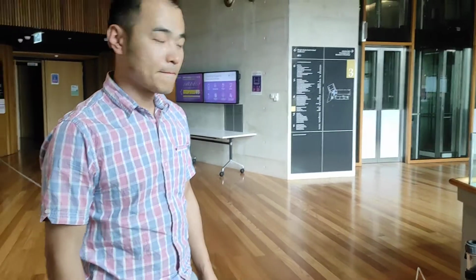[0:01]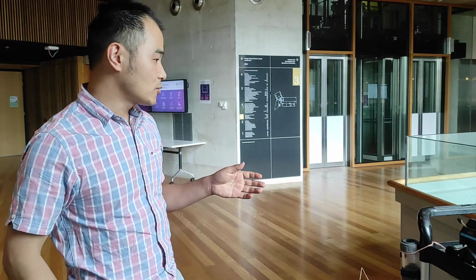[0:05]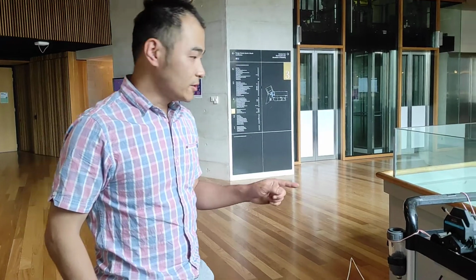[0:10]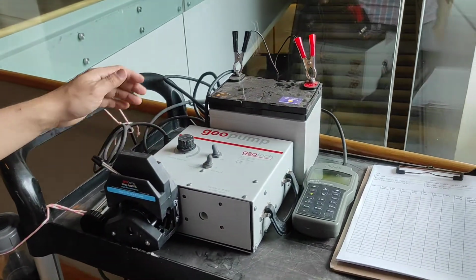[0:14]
Oh, hello. I'm here to show how to test a Peri pump before we go to the field site. So in this setup here, we've got a Peri pump, and we've got a battery that supplies 12 volt DC
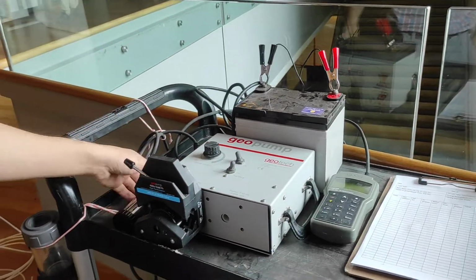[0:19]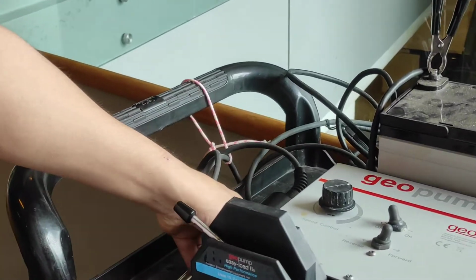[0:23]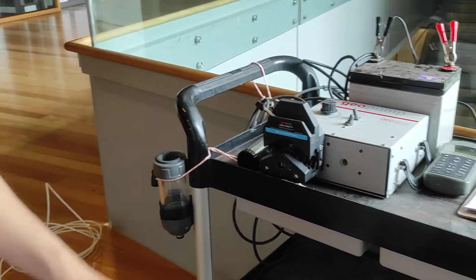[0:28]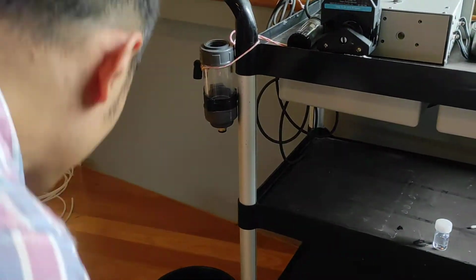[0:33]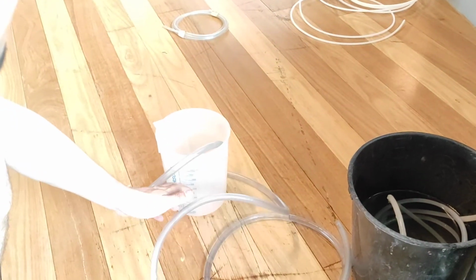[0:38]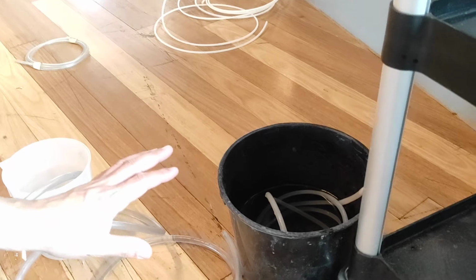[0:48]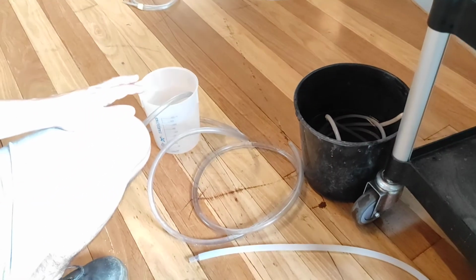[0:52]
to the pump. We've got a flow. This is the water quality meter to measure continuously the water coming out from the borehole. Here is the measurement chamber, and here is the water outlet. So we've got a water level here to measure how much water has been pumped. So once the water is full here, we put it to another separate bucket. So basically the bucket saves all the water coming out from the borehole.
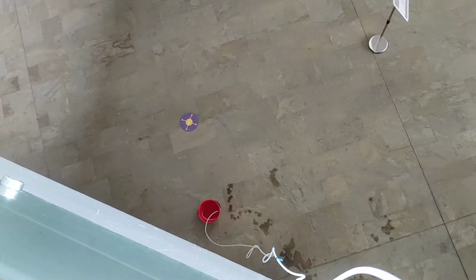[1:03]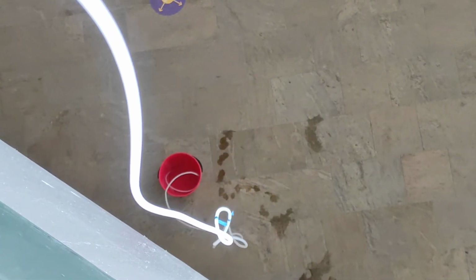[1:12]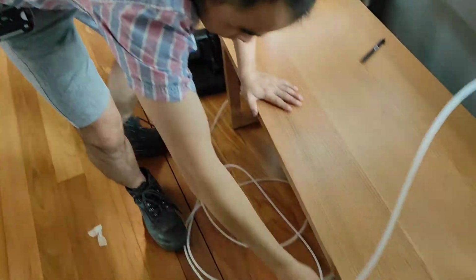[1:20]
So now let's connect it. So here you can see we've got a rigid pipe that goes to the lower level, and the lower level has got a bucket with some water. So you can still see that there are some marks there. That is the indication of how deep the pipe has already been inserted to the borehole. So it goes all the way to the upper section, which looks like this.
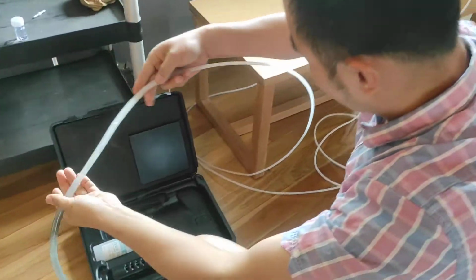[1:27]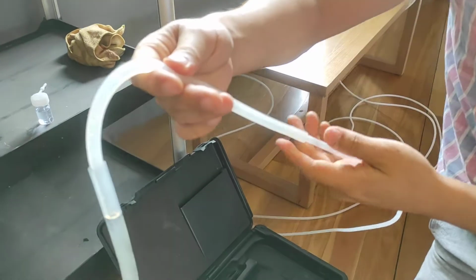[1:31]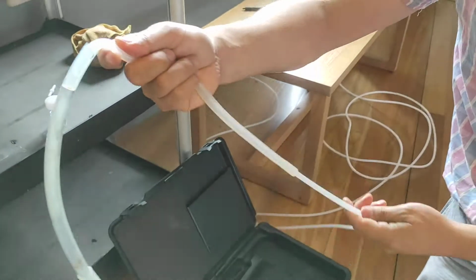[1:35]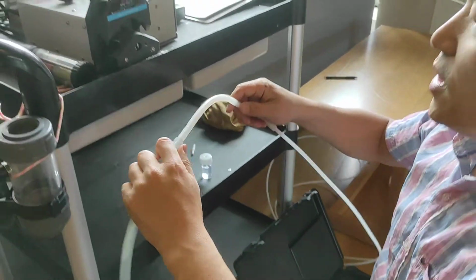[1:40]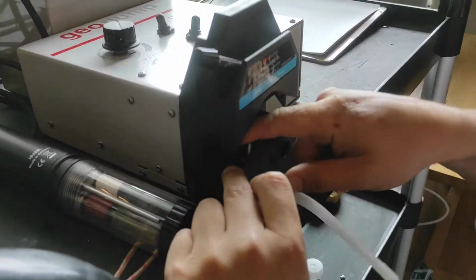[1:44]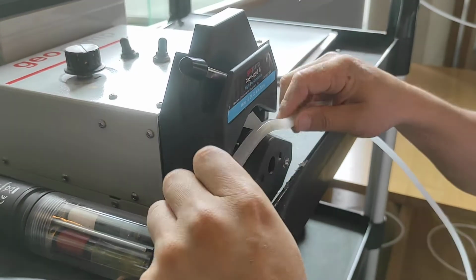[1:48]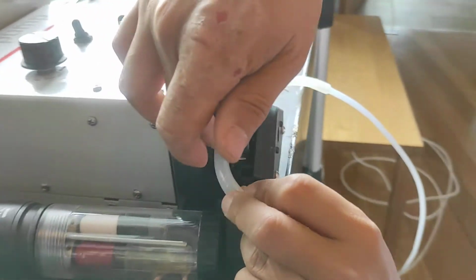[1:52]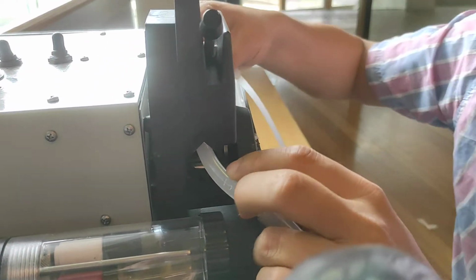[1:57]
And here you've got a few transitions. So here is the rigid pipe, and it's connected to a flex pipe, so it's relatively soft. This one is relatively rigid. So the Peri pump will be squeezing this soft pipe continuously. So you can see this one tends to spin all the time. And the way we insert it is to put it right in the middle and ensure that the pipe is in between the teeth on both sides.
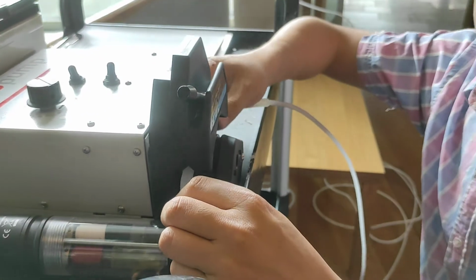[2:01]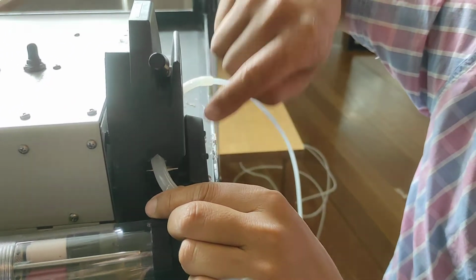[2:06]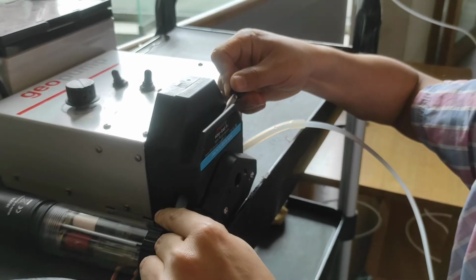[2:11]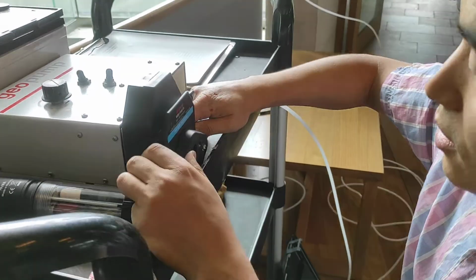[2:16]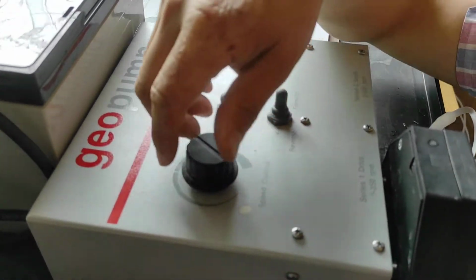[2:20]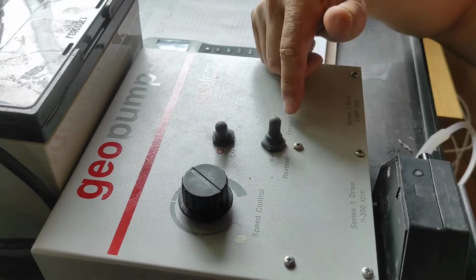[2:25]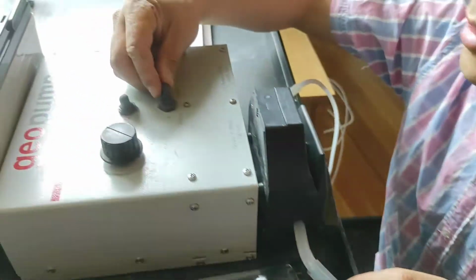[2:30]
So on the other side, you also have the same teeth. So ensure that it sits right in the middle, and then you just press it all the way down to ensure that it's inserted in the right location. Now, in terms of the configuration, here we've got the speed control, the dial for speed control. So this is the flow direction. Currently we are moving from this direction to the other direction. So obviously we need to use reverse.
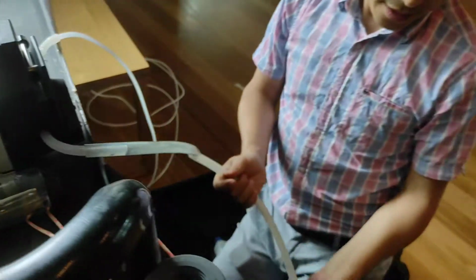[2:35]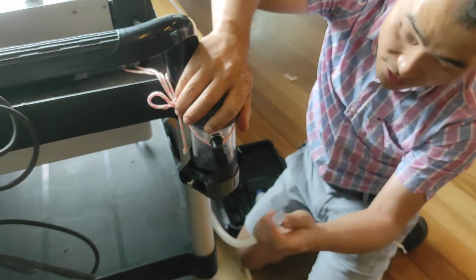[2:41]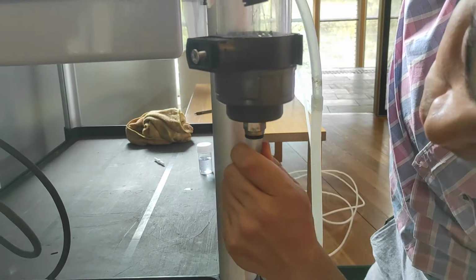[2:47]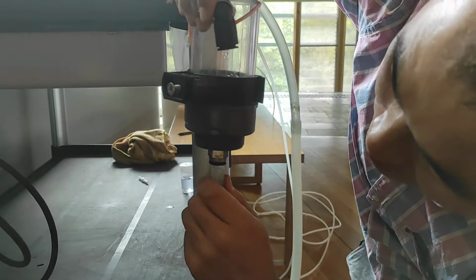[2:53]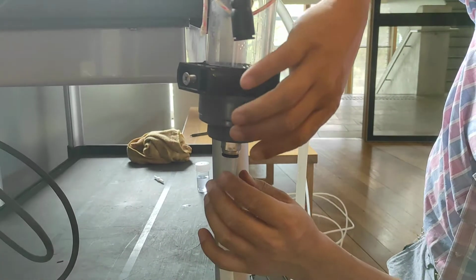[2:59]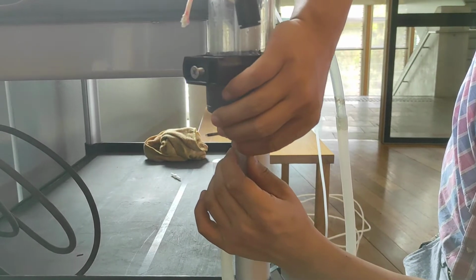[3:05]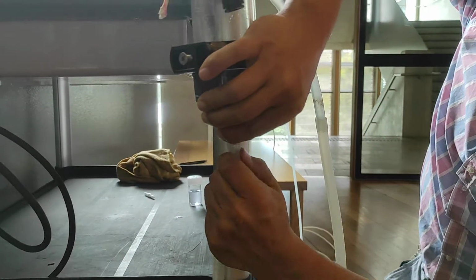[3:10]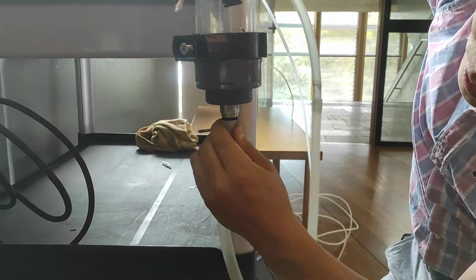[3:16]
And for the outlet, you will need to connect that to the water quality chamber. So it has to be fed in from the very bottom. The way you insert it is that you push it all the way, and then give a pull so that it's sealed properly. When you try to pull, it becomes very difficult. The only way to take this out is to use your hands to fix the top ring, and then try to pull it out. So that's the only way to pull it out. Ensure that it's been pulled out all the way so that it will be sealed properly.
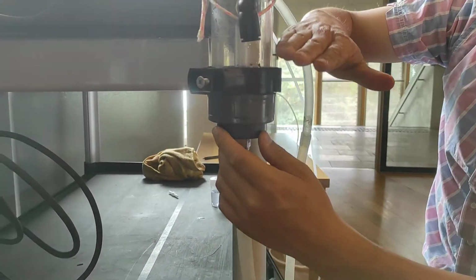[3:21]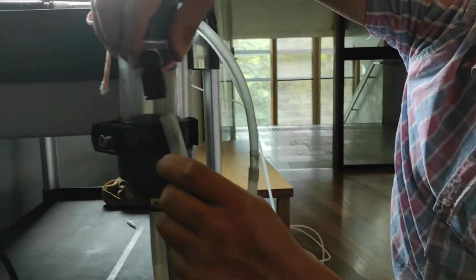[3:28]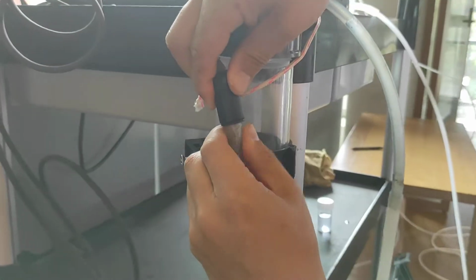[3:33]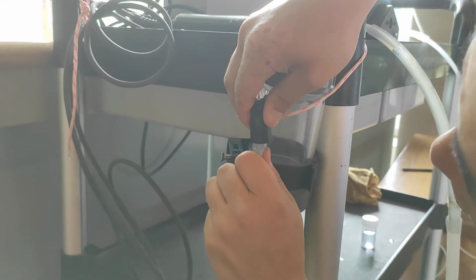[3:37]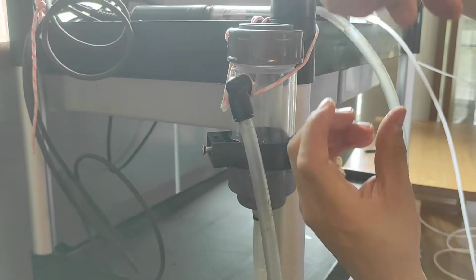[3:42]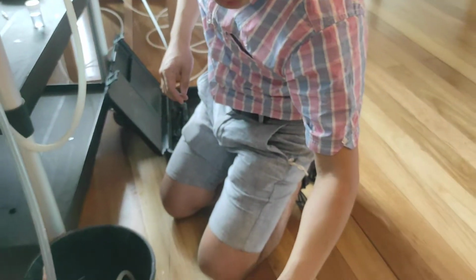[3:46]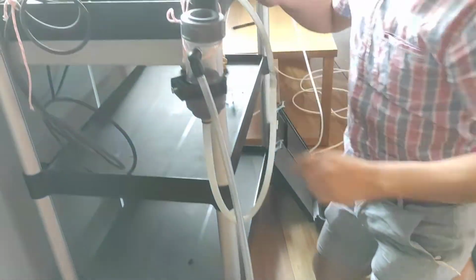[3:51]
And once the water goes from the bottom, it will fill up the chamber and eventually lift from here. So this is the section. Now we connect another pipe in, and again it has to be squeezed all the way. And then pull out a little bit so that the pull will reduce the diameter and make a perfect seal. And it goes all the way to the tubing. Right? Now, we also need to install the sensors.
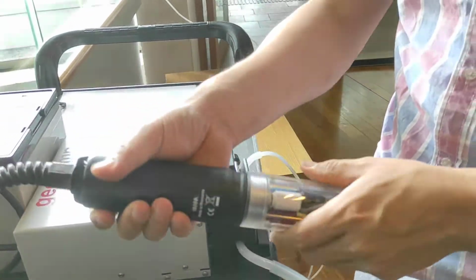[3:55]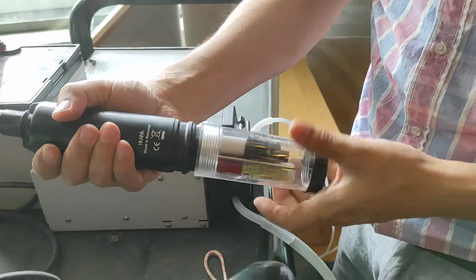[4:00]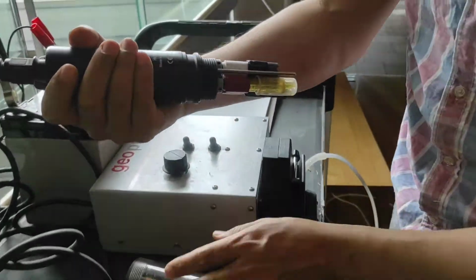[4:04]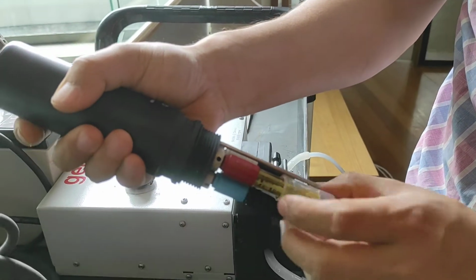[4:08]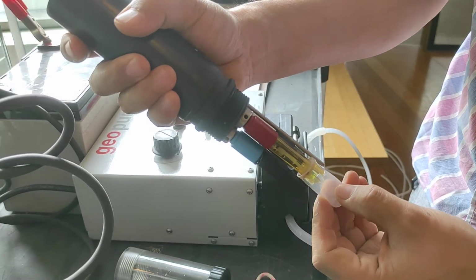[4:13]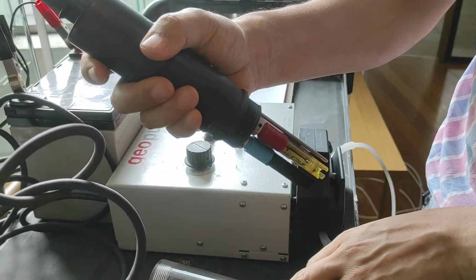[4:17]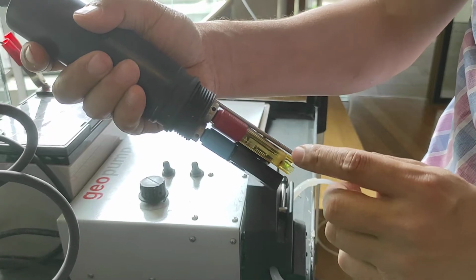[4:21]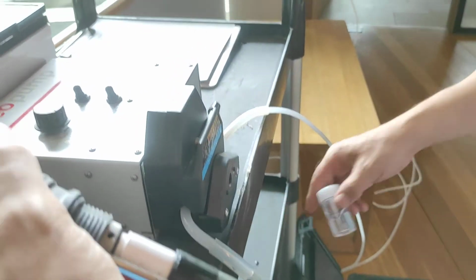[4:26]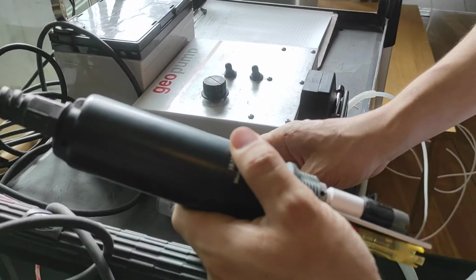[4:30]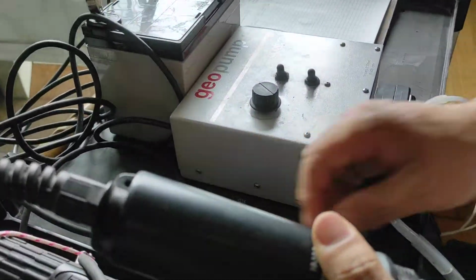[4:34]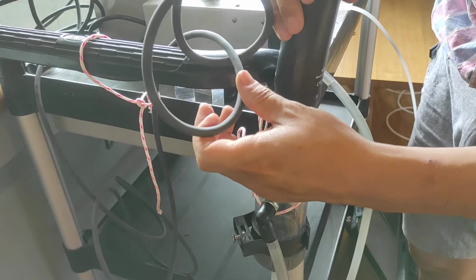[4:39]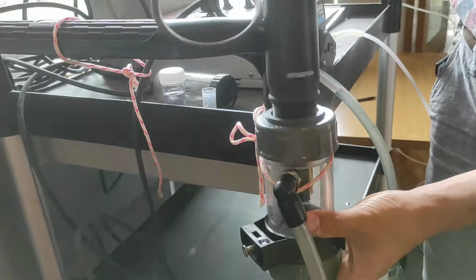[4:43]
So we've got the Hanna water quality measure. So we need to first unscrew the cap. And after it's been unscrewed, we need to ensure that the cap on the pH meter is removed. And remember that the water there is to prevent the pH meter from being damaged. And after the test, we always need to fill that water and ensure that the pH meter is submerged. So we provide a solution here. When the test is finished, add the water into that cap and ensure that the sensor is submerged. And then you insert that into the chamber and twist it
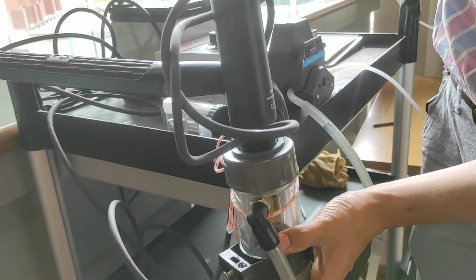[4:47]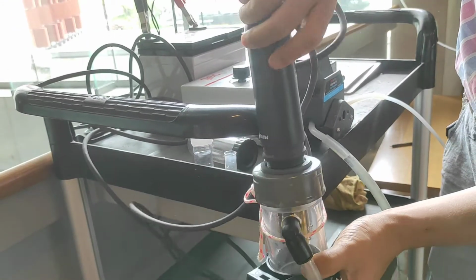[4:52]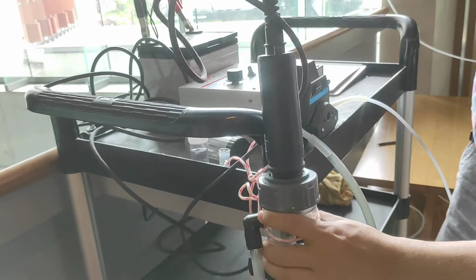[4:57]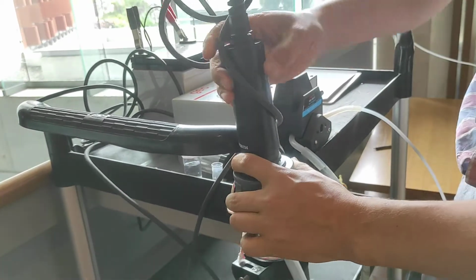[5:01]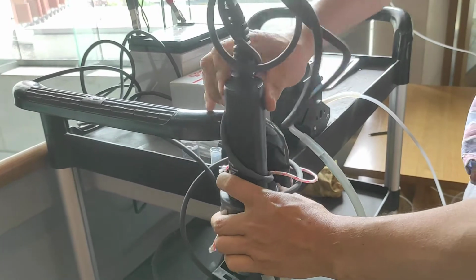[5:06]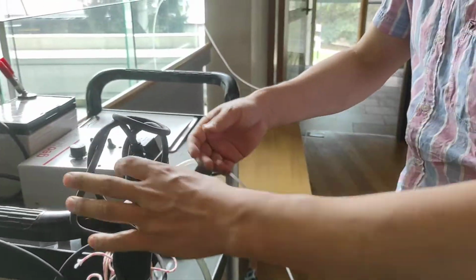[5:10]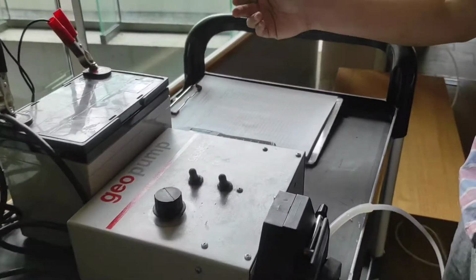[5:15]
to ensure that the flow is able to be measured by the multimeter here. A very important, useful thing is that I would advise bringing a table on the side, so you would have everything laid out in this manner, where you have the record paper ready and also the pH meter ready.
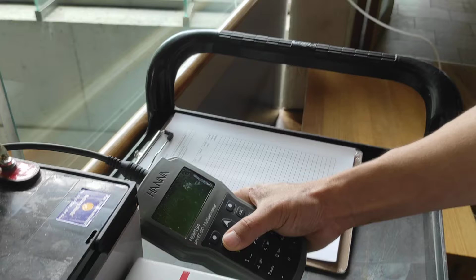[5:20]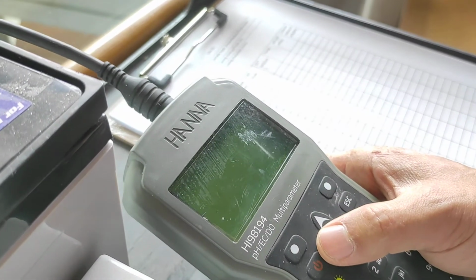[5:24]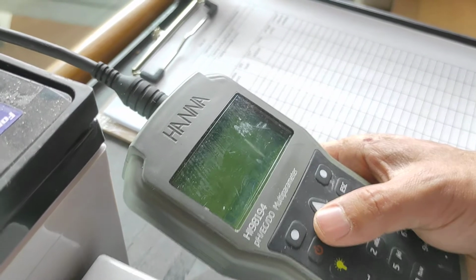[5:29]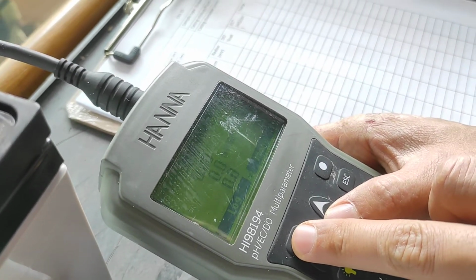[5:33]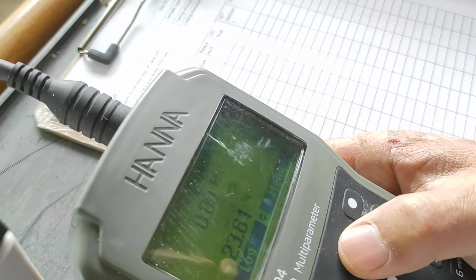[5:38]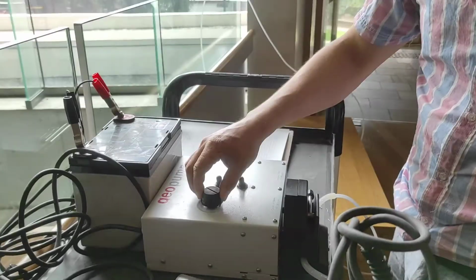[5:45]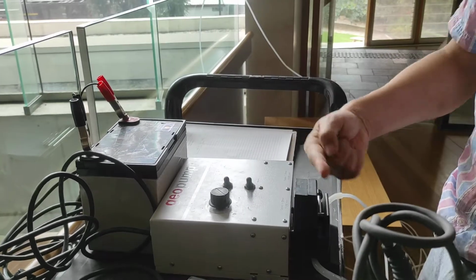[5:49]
So we can switch on the pH meter right now by just pressing the power button, and then you will be able to see the welcome page, and then you just need to connect the measure. So just connect measure, and then you will be able to see some values there. So you can move up and down to change different values. Now let's switch on the pump. So again, before we start, speed control is somewhere right in the middle, and the direction is reversed this way, and then we can switch on.
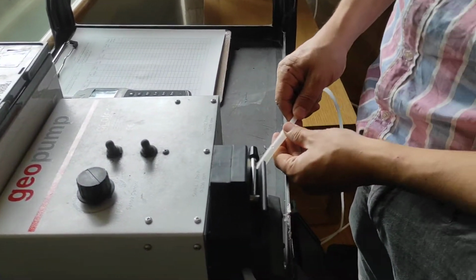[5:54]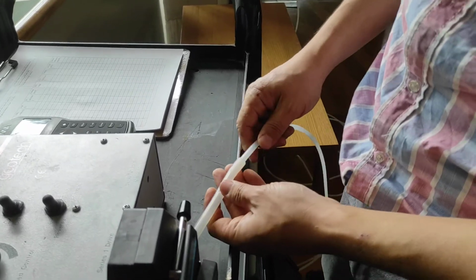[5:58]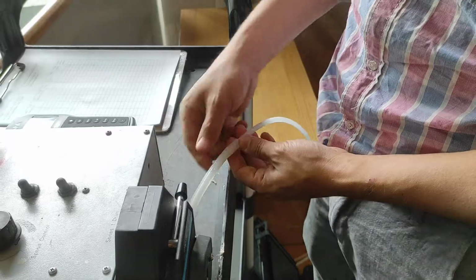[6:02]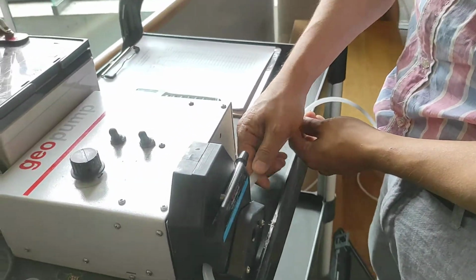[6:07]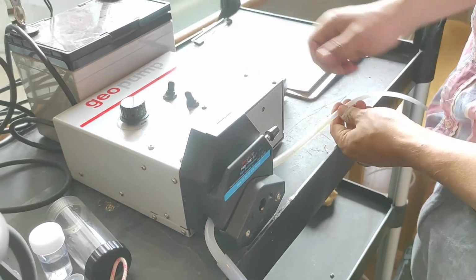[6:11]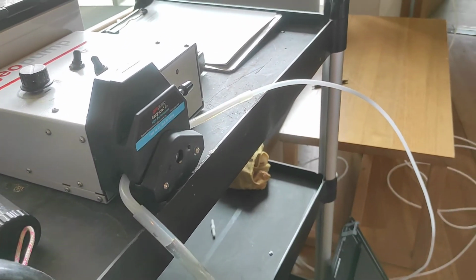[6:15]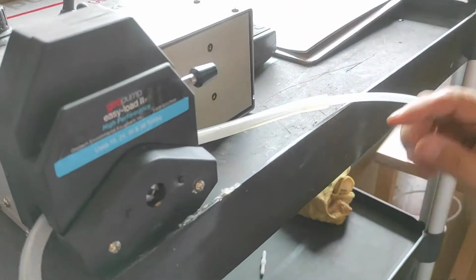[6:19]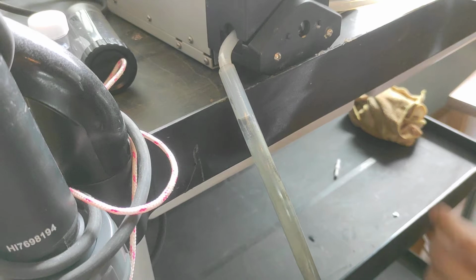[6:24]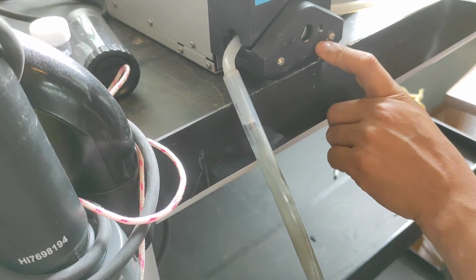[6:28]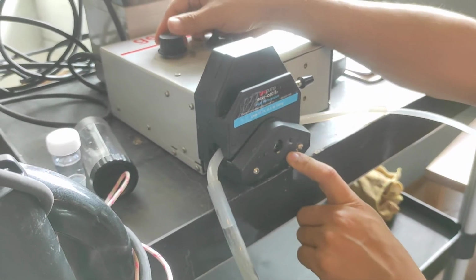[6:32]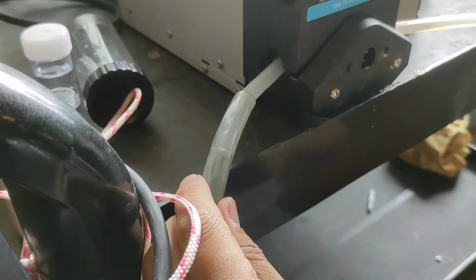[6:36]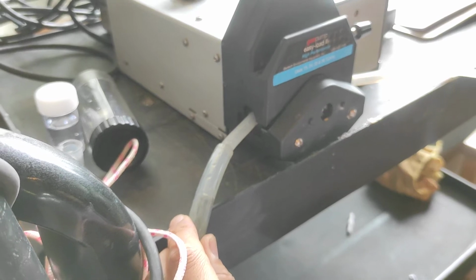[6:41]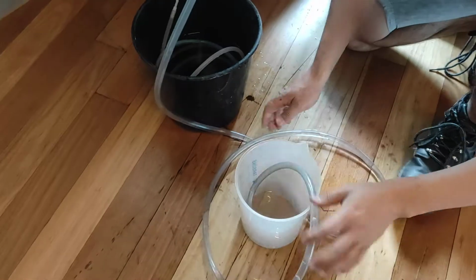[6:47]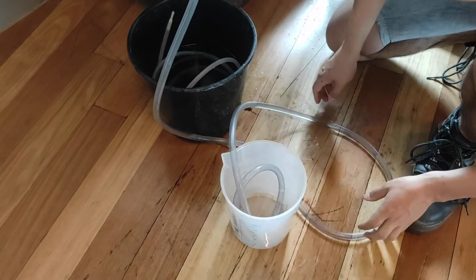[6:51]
So there are cases where the water flows very slowly or probably not moving at all. In that case, we just need to ensure that the section between the rigid pipe and the softer pipe is connected properly, and we just switch it on. And hopefully we are able to identify some bubbles that move along the tube. Currently it's air, so we can't see anything. And at this stage, we probably can speed up the Peri pump. So you will see the speed going up. Now it's maximum. So you can see the water is just moving along this way, and hopefully all the way from the water level in the borehole to the water sampler. So currently we are ready to receive water from the other side.
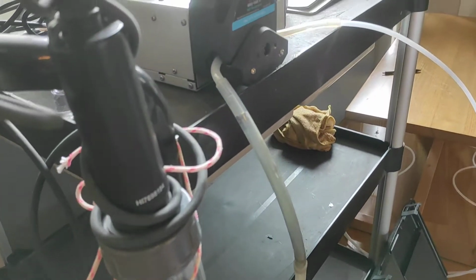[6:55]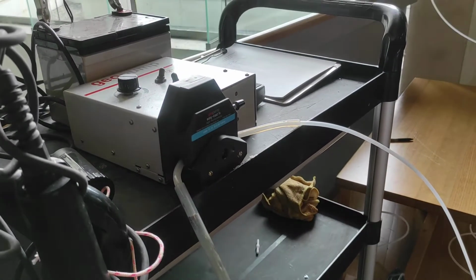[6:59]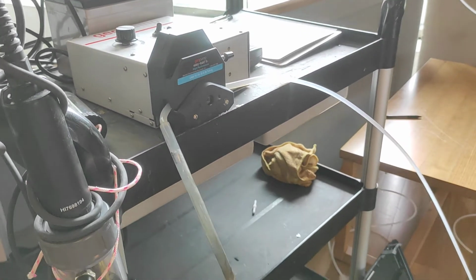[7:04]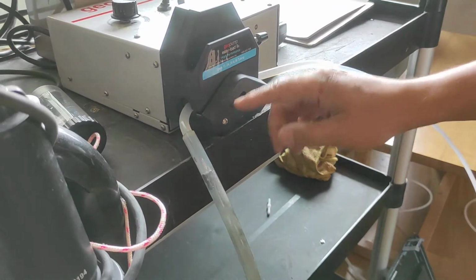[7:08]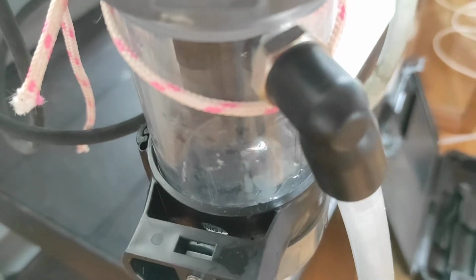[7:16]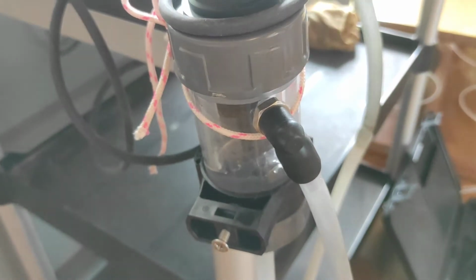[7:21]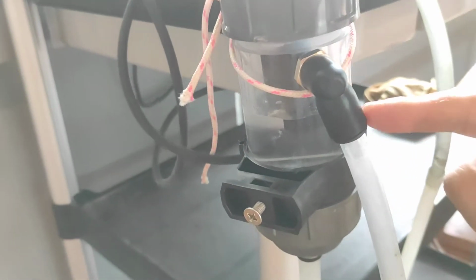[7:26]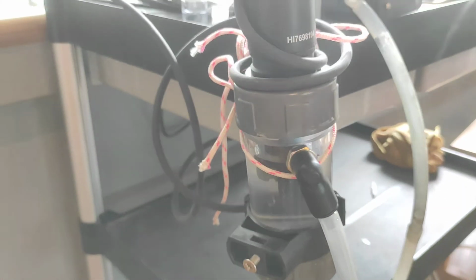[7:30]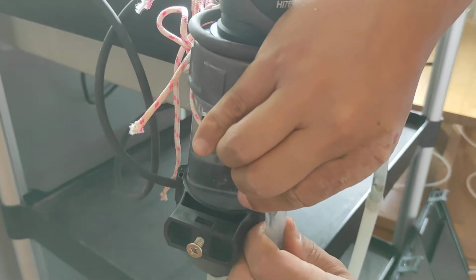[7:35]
Probably we just wait here. So I think the water is already coming to the quantities chamber, so the water level is gradually rising up, and that means the seal in between is done perfectly, and there's no leaking at the very bottom. We haven't tested whether there's any leaking from this outlet, but nevertheless water is moving out. So here this one needs to be further tightened so there is no leaking at all.
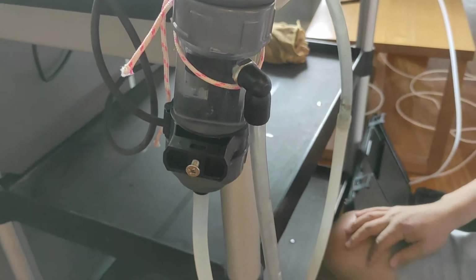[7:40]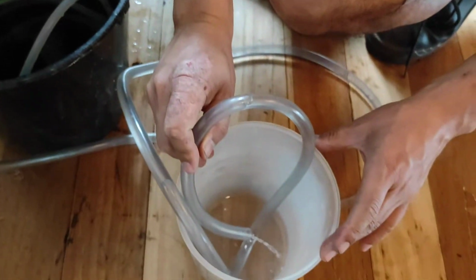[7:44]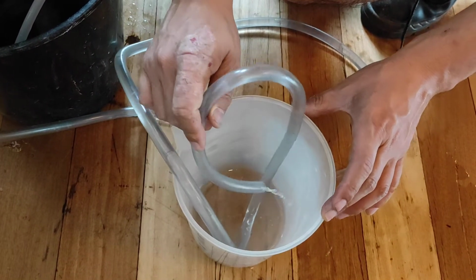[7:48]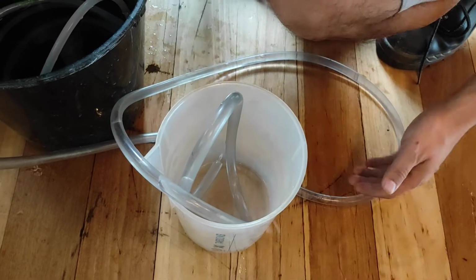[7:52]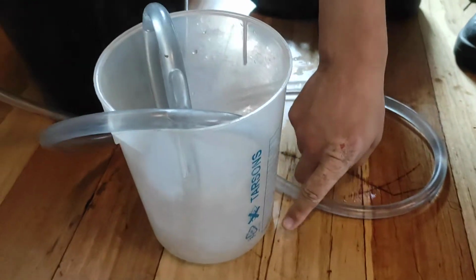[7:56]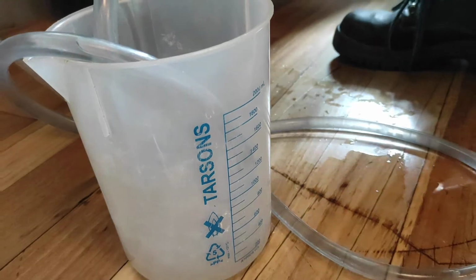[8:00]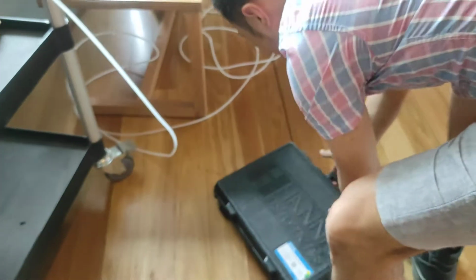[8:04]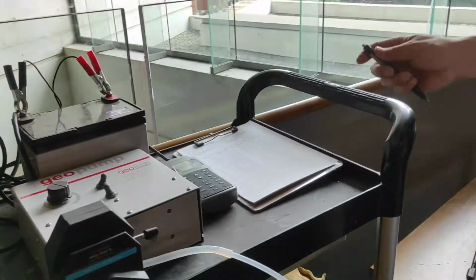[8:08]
So now there's no leaking, and you can see that from the outlet it's coming like a small stream, slowly filling up the container, and then we use this to identify how many liters have been received. Now let's look at how we are going to record the results. So come over here.
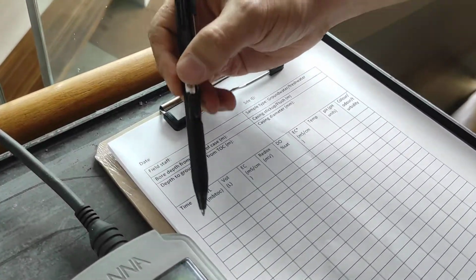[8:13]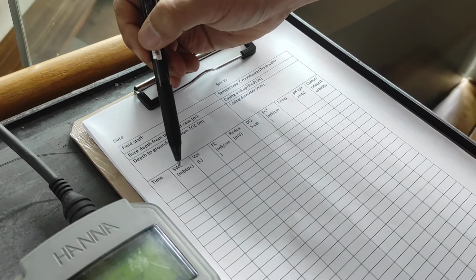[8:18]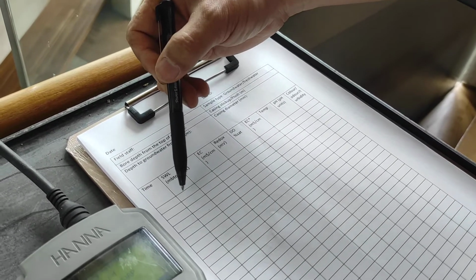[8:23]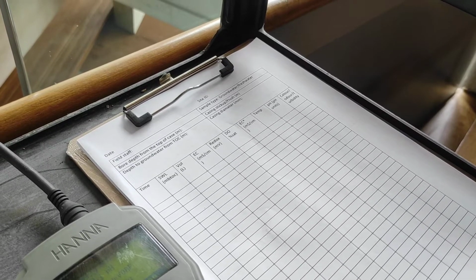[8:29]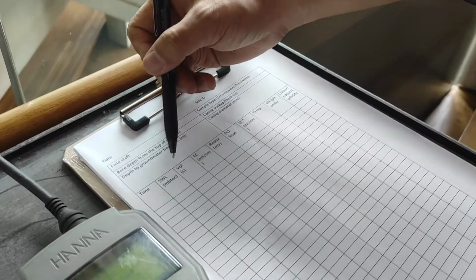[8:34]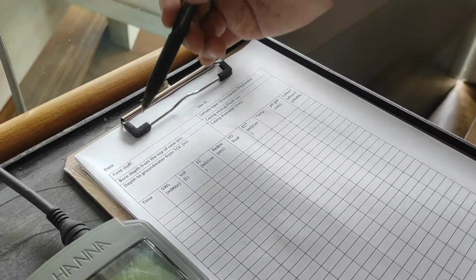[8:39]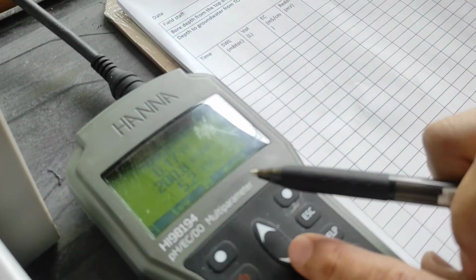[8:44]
In this spreadsheet, we've got time. So when we do the measurements, we write down the time. And the still water level will be measured by a groundwater meter, which will be provided separately. So you just put it in slightly, and once it beeps, that's where the water level is. Record that. And the volume of water is measured by the container on the ground.
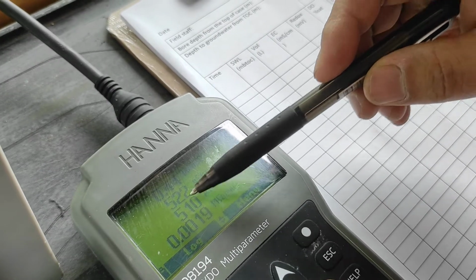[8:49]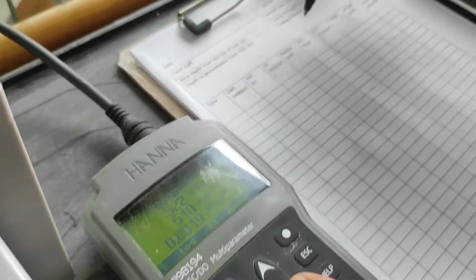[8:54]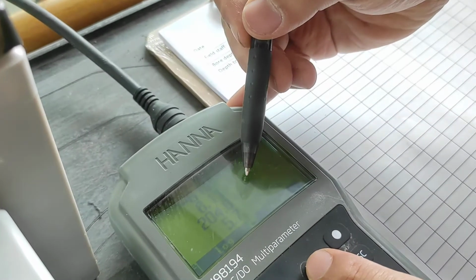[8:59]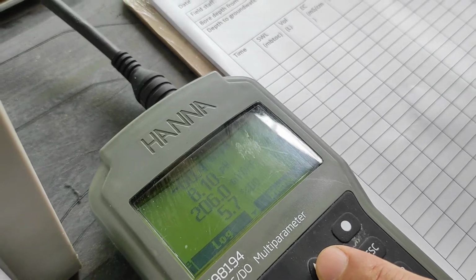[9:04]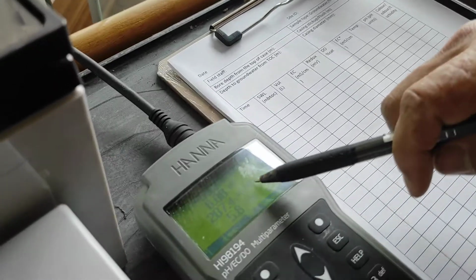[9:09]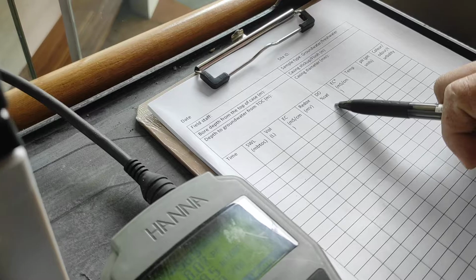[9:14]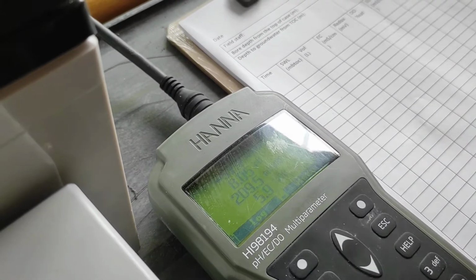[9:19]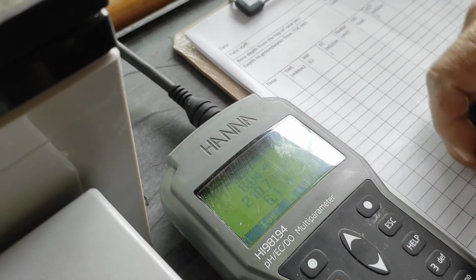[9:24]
In terms of EC, it will be measured in microsiemens per centimeter. So that's basically the EC. Currently it's 500, which means it's relatively fresh. The redox will be measured by the mV ORP. Currently it's around 200, which means that it's very positive. It's not basically groundwater. Usually if it's groundwater, it tends to be a negative value. And we've got the dissolved oxygen, which is 5.9. So this water is very well oxygenated. Usually if it's groundwater, we tend to receive very, very low values.
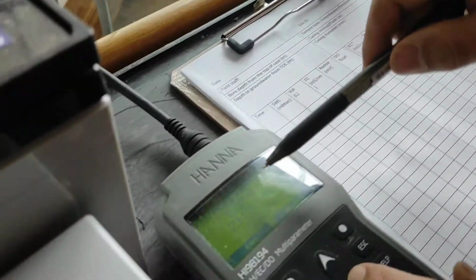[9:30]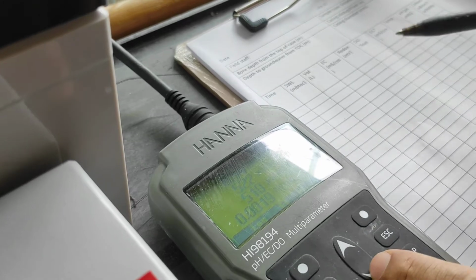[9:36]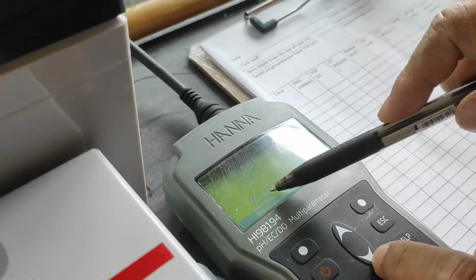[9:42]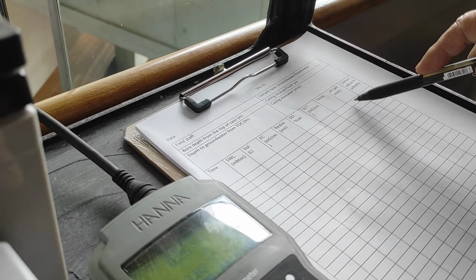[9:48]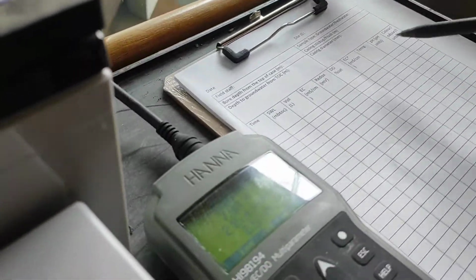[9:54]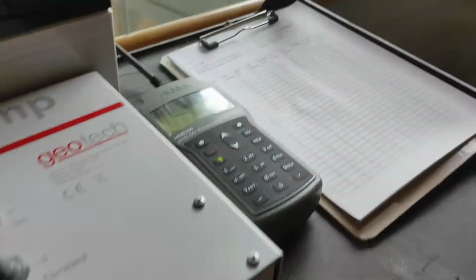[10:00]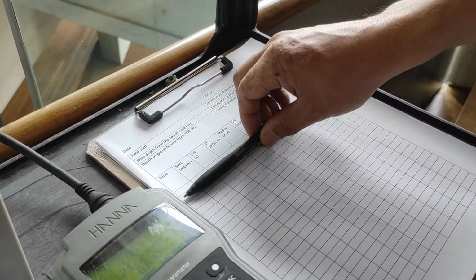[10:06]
We also got the EC with a star, that's the effective EC. This effective EC is the one underneath the EC, so 510. That is the value we need to put in. In terms of temperature, if we press down further, we got 23.23. So that will be filled in here. Then the pH, which is 7.98, so we put it in here. Finally is, in general, what the color looks like. You see that it's basically transparent, so you just say transparent. And then we just keep doing that. Once this line is finished, we do another line, probably in 2 minutes.
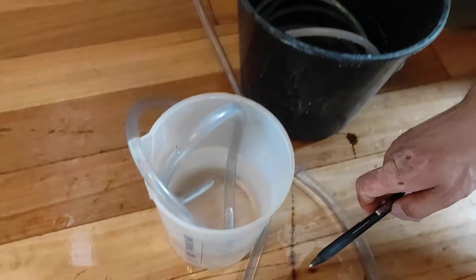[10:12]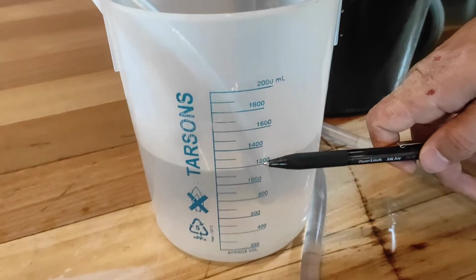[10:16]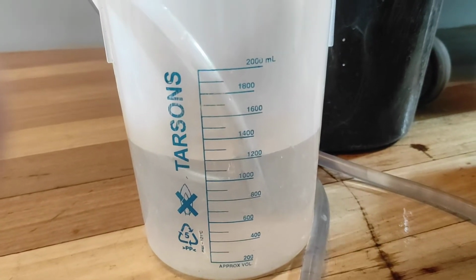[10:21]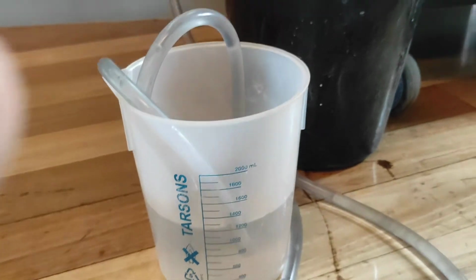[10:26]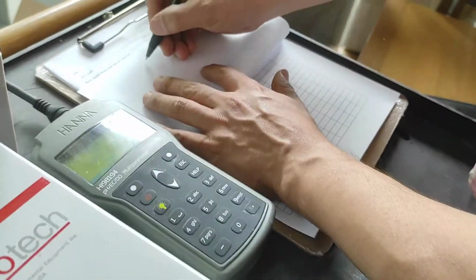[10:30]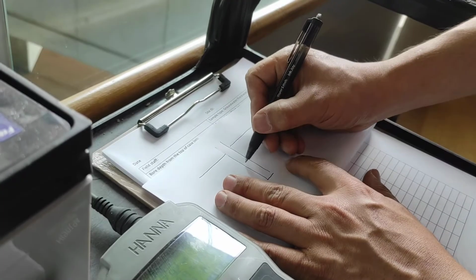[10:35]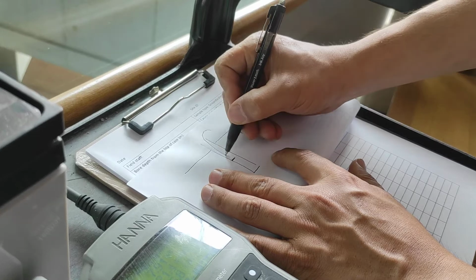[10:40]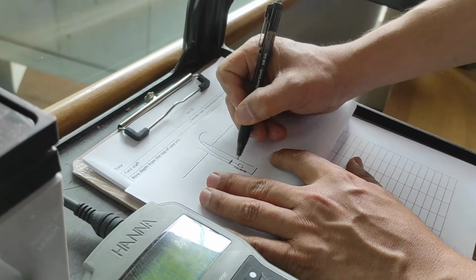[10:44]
So currently, how many liters have we received so far? Within the time, we've already done 1,200 mils, right? Then the question is how much water do we need to pump out? First of all, let's do a very quick sketch. Assuming we've got a borehole, and here's the ground, and probably the water level is here, right? And you slide your tubing all the way to the location where your screens are. So let's say the screen is here.
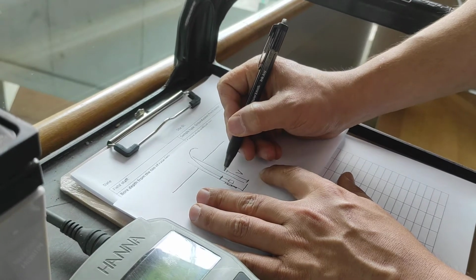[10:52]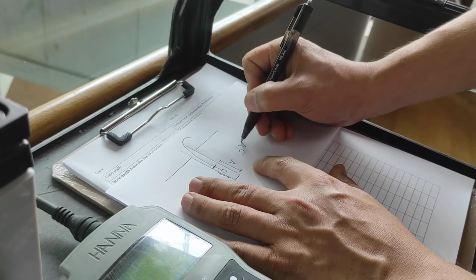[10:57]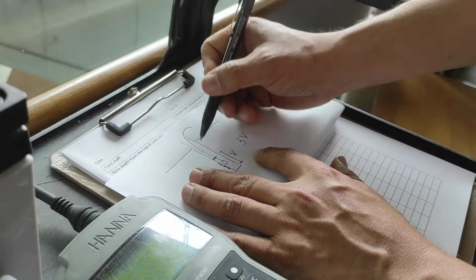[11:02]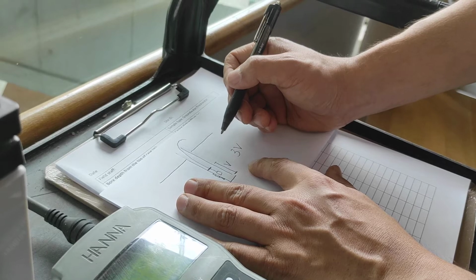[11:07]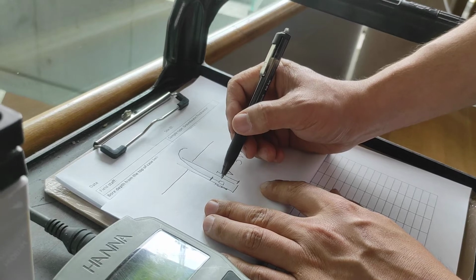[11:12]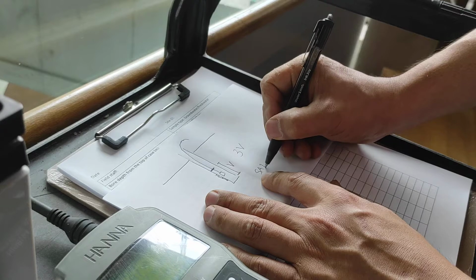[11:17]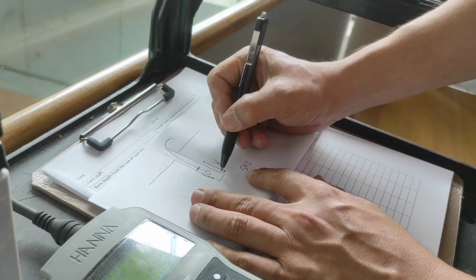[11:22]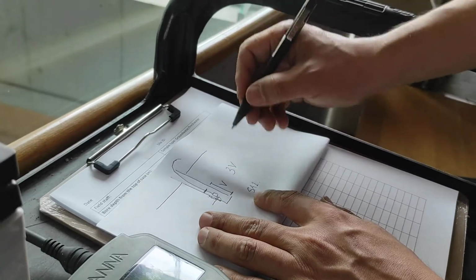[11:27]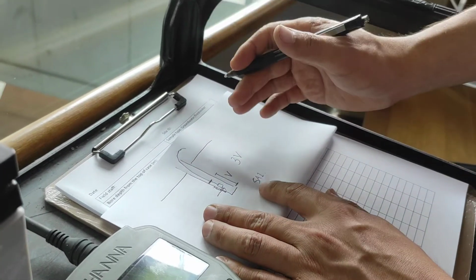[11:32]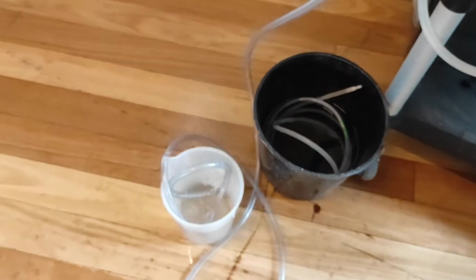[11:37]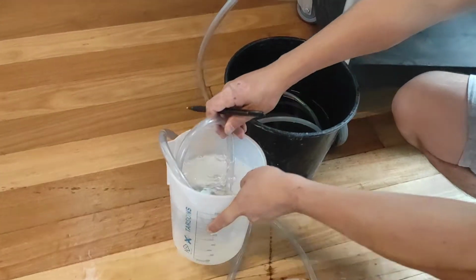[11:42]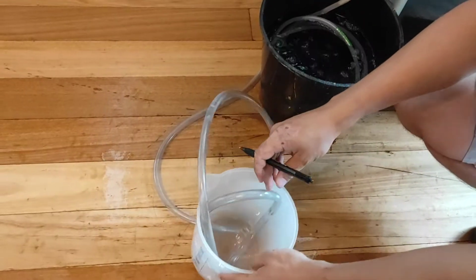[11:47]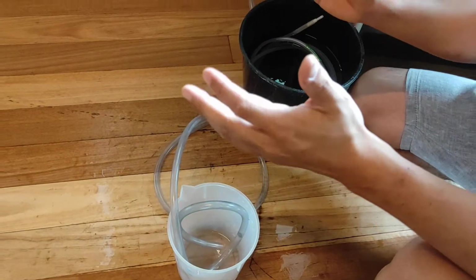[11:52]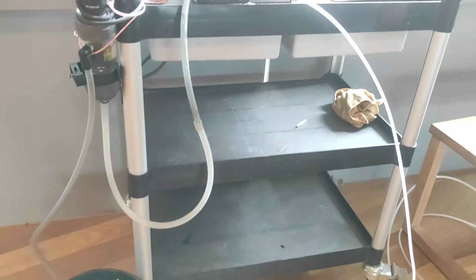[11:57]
Now, usually we need to work out the volume within the PVC, and the amount of water to be sampled is basically 3 times the volume we measured here. So this will be based on the specification of the borehole plus the current water level. But in practice, sometimes the borehole is very slow in responding. For example, our site SA1 is very slow in responding. So in that case, we probably just collect whatever we have for the very last time. If right now we collect the fresh groundwater, this is probably already oxygenated within the PVC tubing. But the final amount of water is coming out from the screen into the PVC, and that's the groundwater, not the water sitting within the PVC.
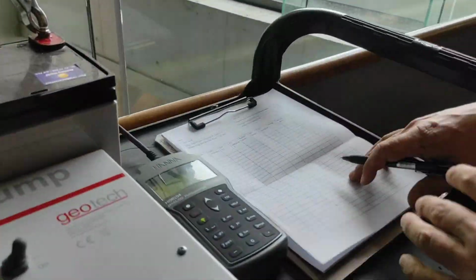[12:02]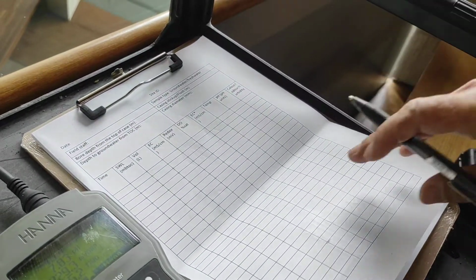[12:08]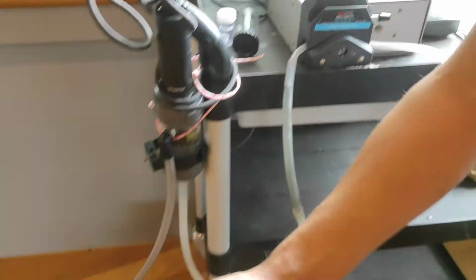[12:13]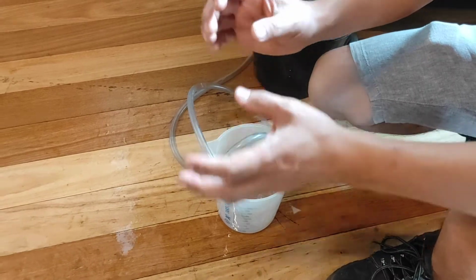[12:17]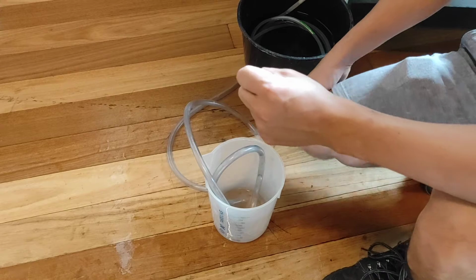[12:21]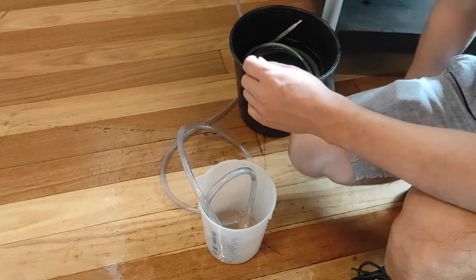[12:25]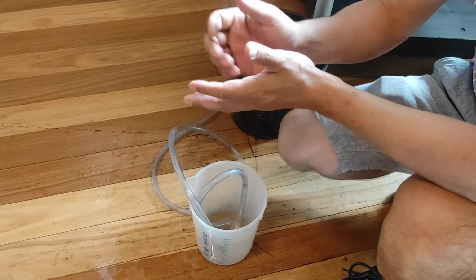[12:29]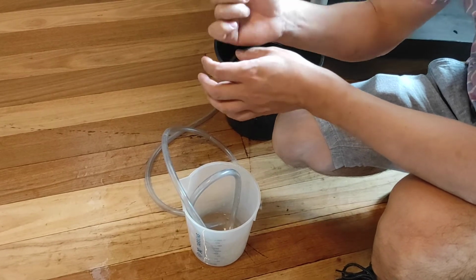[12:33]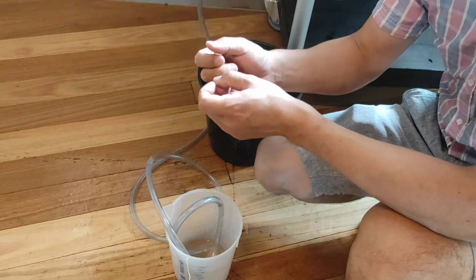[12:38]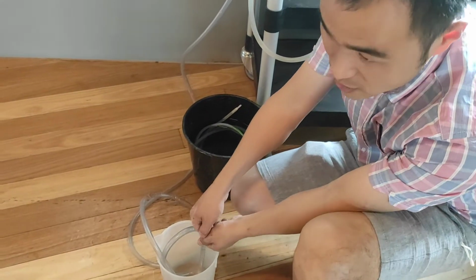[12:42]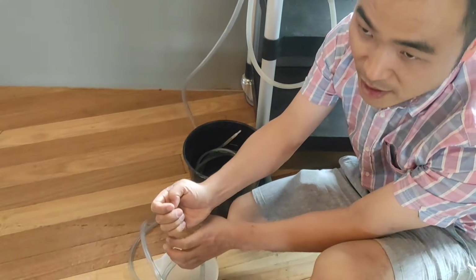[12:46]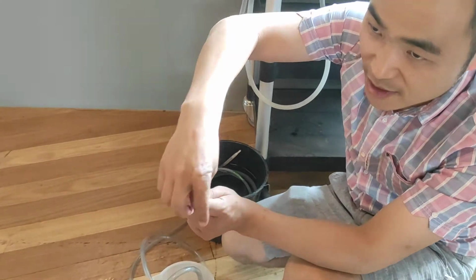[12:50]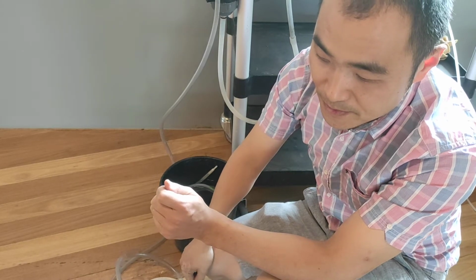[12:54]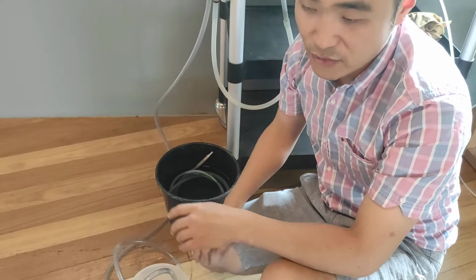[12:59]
So we just keep that going, and then finally we'll be able to fill up this spreadsheet, and then the sampling is completed. When that is completed, the final amount of water needs to be filled into 2 separate sample bottles. The bigger one is for anions, and the smaller one is for cations. For the cations, we've got 2 types. One of them is the total metals, in which case we don't have to filter it. But if it's just the dissolved ones, we need to filter it. So just use the syringe at the specific amount, inject it into the sample, seal it properly, and use the electrical tape to seal it.
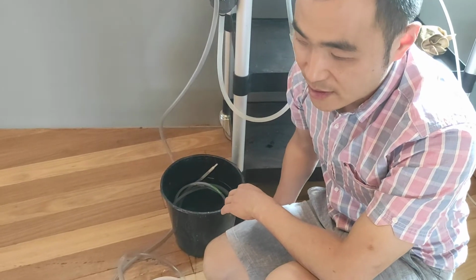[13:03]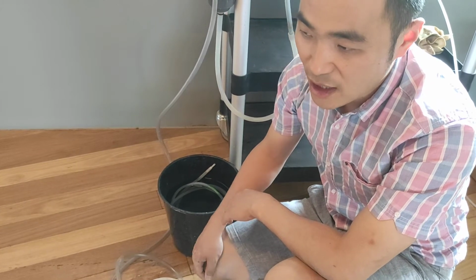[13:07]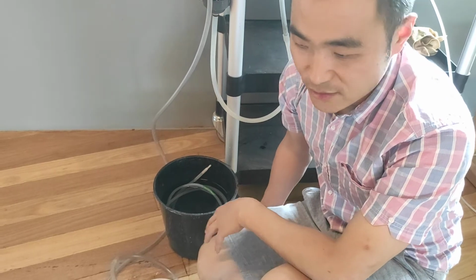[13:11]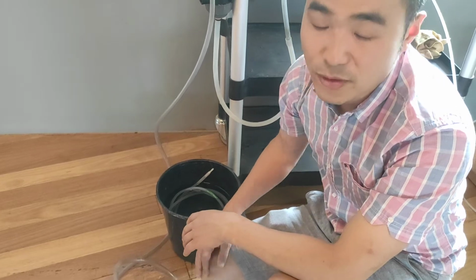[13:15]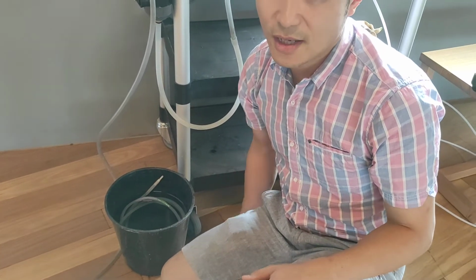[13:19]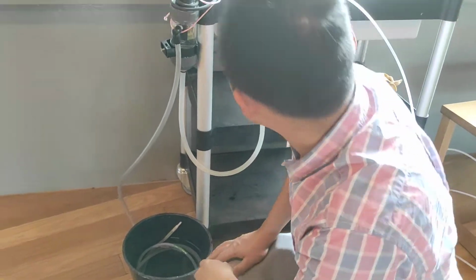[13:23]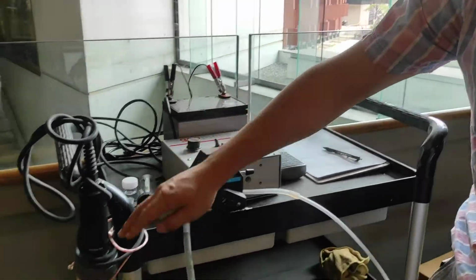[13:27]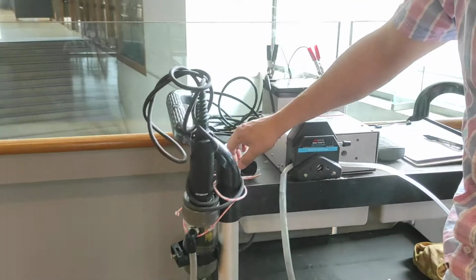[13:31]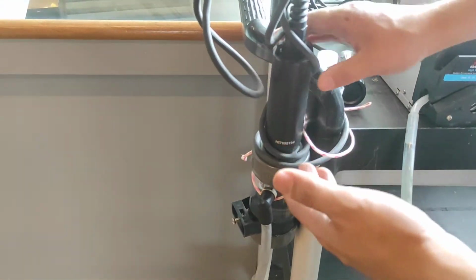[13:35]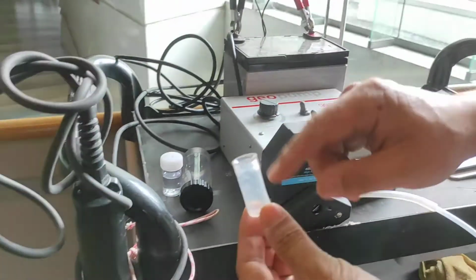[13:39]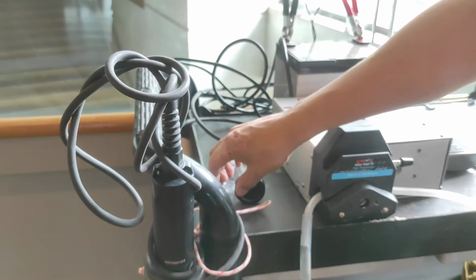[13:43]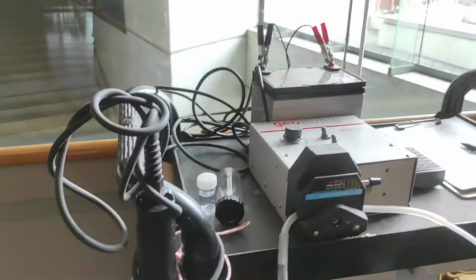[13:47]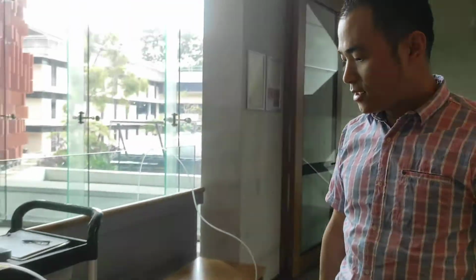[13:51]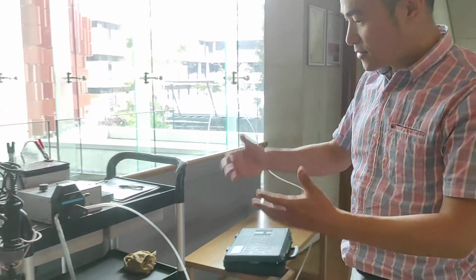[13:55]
And then we deliver it for water sampling analysis, and also ensure that the bottles are always in refrigerated condition. If you stay in the hotel, it will be good to put them in the fridge, and then just send the whole thing for analysis. Once it's finished, you just switch off here, and then put all the things in place. The most important thing is that once we unscrew the water quality meter, the pH probe has to stay inside this rubber cap, and also be filled with this solution to ensure that the next time the value is accurate. That's all about the trial today. So it seems to be working. Thank you.